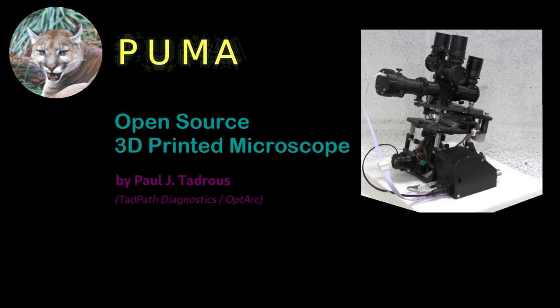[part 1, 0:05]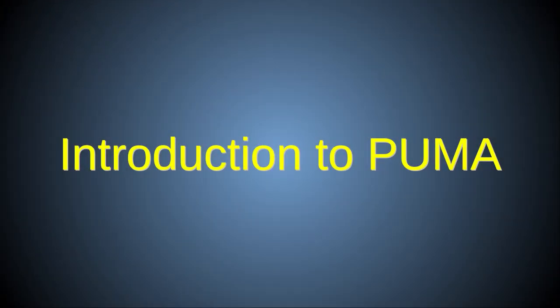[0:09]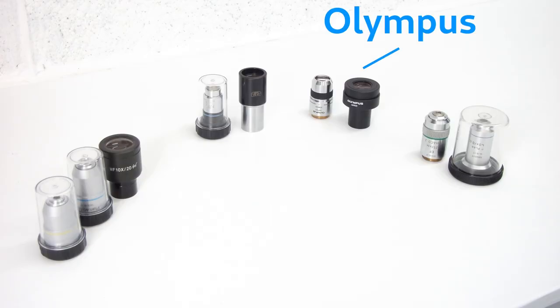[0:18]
This is an overview of PUMA, an open-source 3D printed microscope which you can build as a DIY project. It was designed to use professional quality optics for research and education as a portable and low-cost alternative to the much more expensive commercially available scopes like this one.
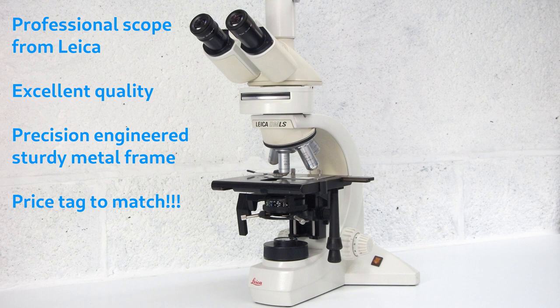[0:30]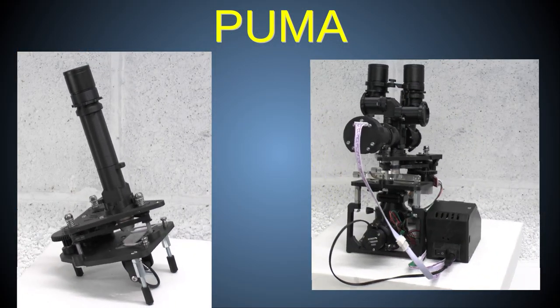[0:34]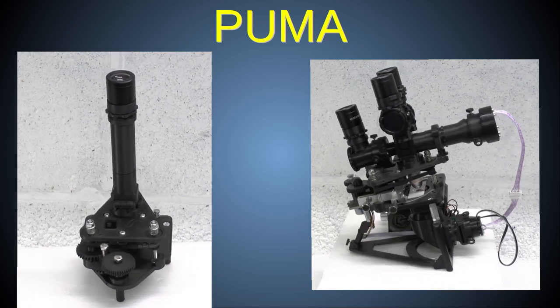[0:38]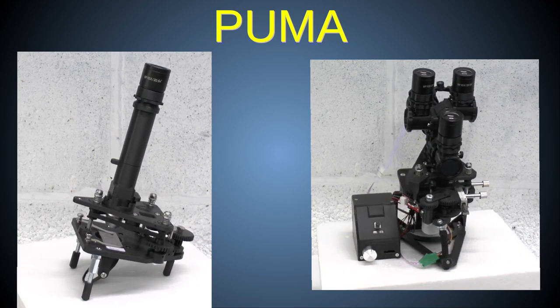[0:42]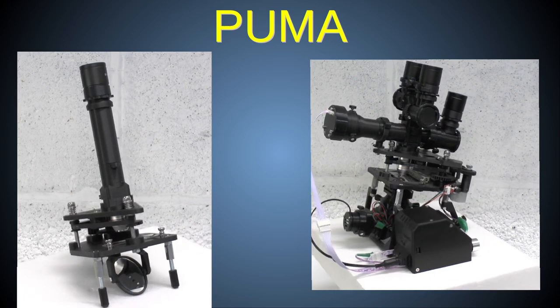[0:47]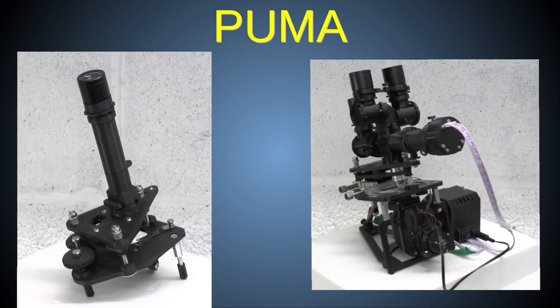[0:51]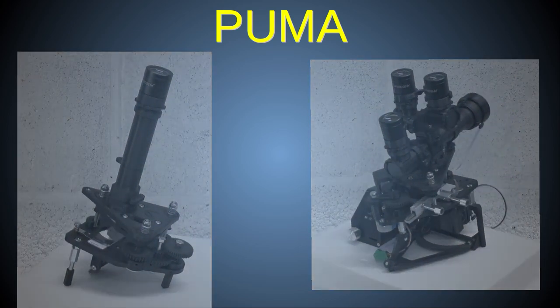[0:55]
PUMA is open-source and fully customizable. However, because its frame is made of 3D printed plastic, PUMA does have some limitations over those all-metal scopes, but it also has some very advanced features that are not usually found even in the most expensive professional scopes. This video will introduce you to those features and limitations, so you can decide if a PUMA microscope is suitable for you.
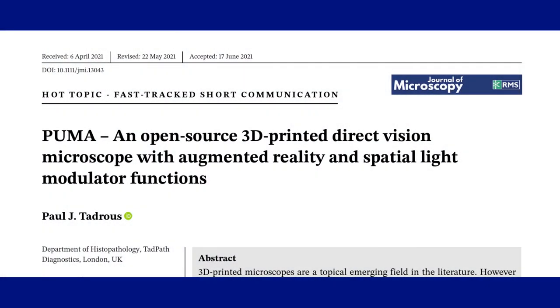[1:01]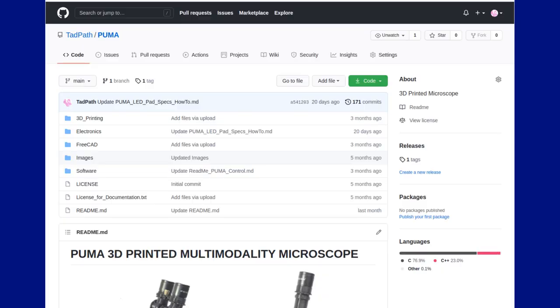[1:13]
For more detailed information about PUMA, see this peer-reviewed scientific paper published in the Journal of Microscopy, and also the PUMA GitHub page. Links to both of these are in the video description below. This YouTube channel will also provide more detailed videos on specific aspects of PUMA that are only briefly mentioned here.
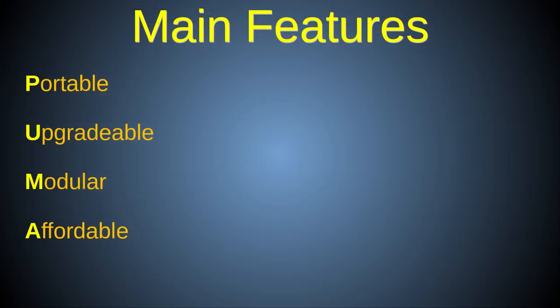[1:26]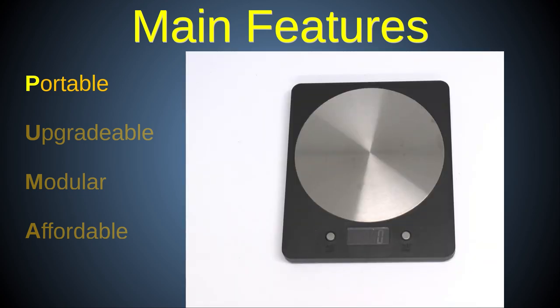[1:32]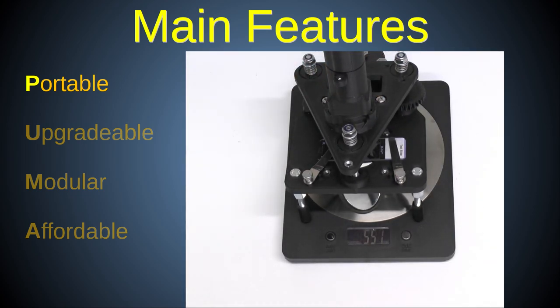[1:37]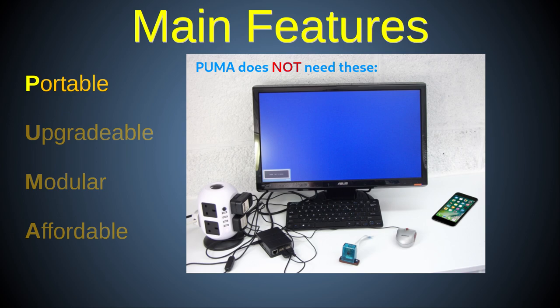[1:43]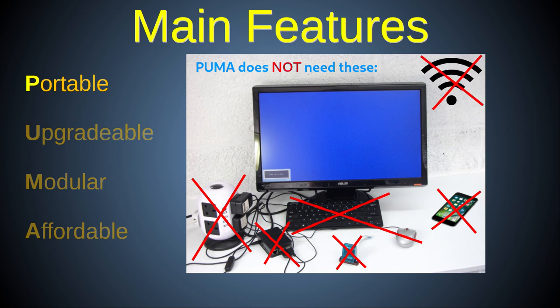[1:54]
PUMA stands for Portable, Upgradeable, Modular, and Affordable, some of the key features of this system. PUMA is totally portable. Not only is it small and lightweight, but, unlike many other professional microscopes, whether 3D printed or otherwise, it does not require mains electricity, a PC, a camera, a smartphone, mobile or internet signal, or a monitor to operate.
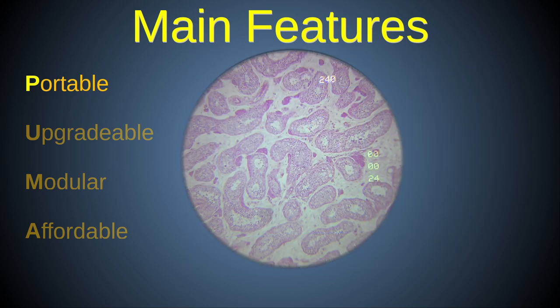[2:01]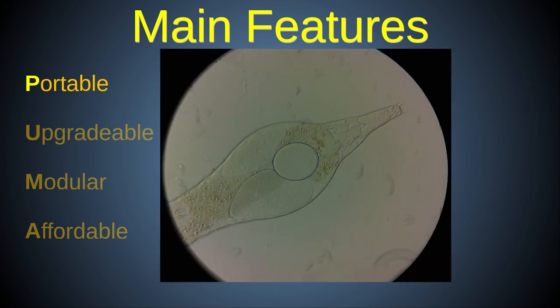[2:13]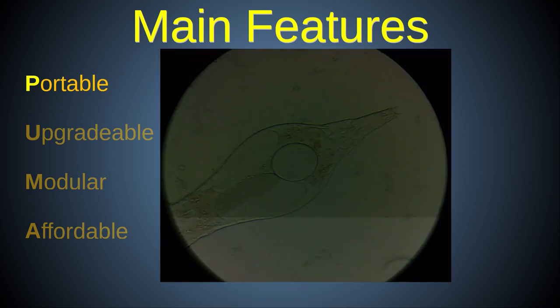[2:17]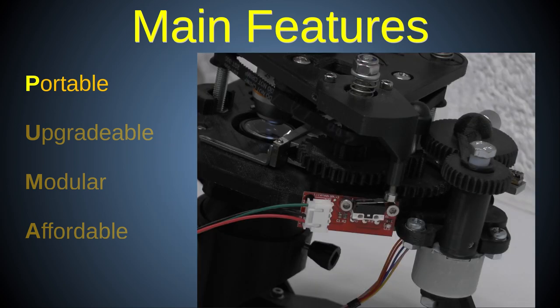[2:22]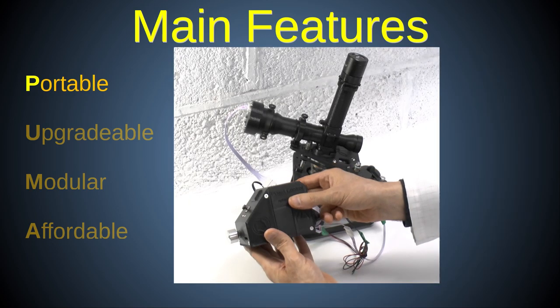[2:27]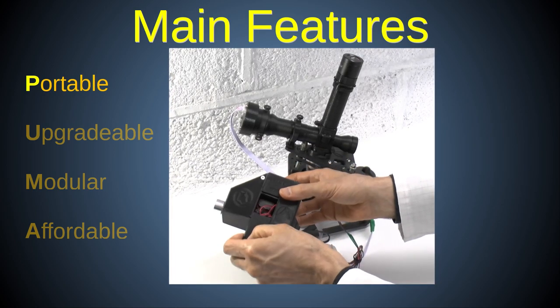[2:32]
Even PUMA's advanced options, such as its augmented reality heads-up display that can provide mobile image analysis, amongst other things, Fourier light filtration for phase contrast and other advanced lighting effects, and a motorized Z stage, are completely portable, being driven by a small battery-operated control unit which includes an Arduino Nano microcontroller.
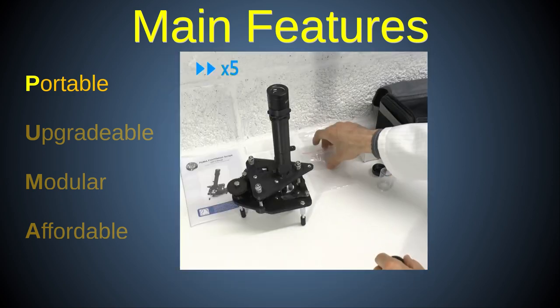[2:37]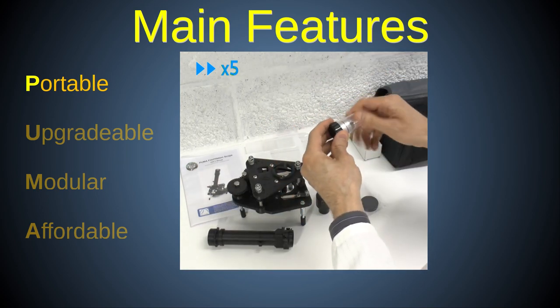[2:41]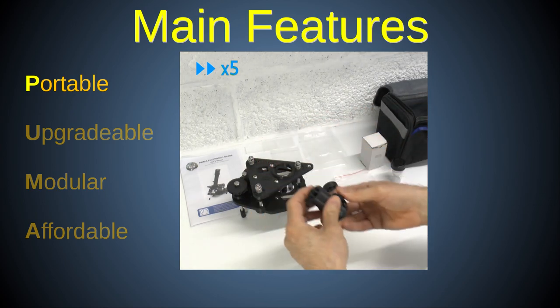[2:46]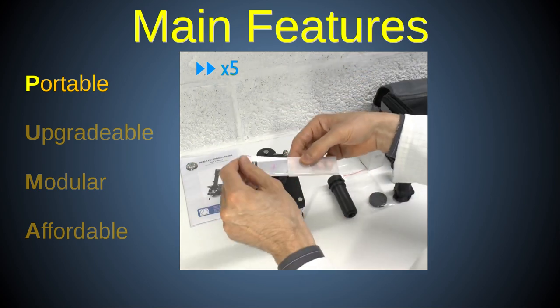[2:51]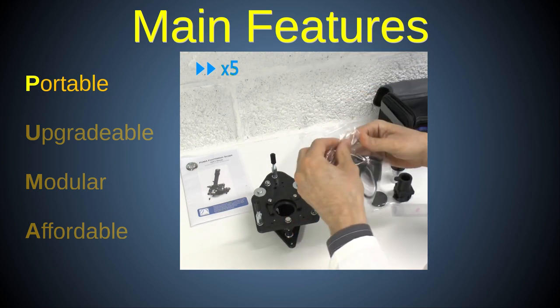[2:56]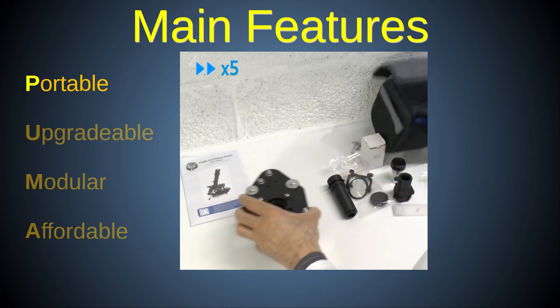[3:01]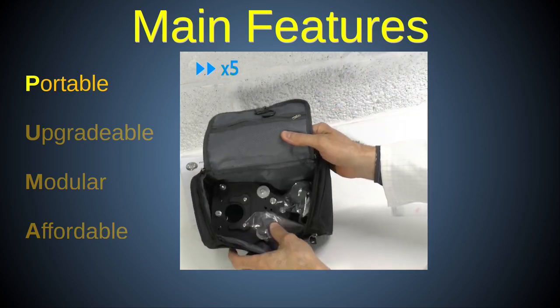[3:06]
PUMA scopes can also be quickly field stripped for transport and likewise reassembled. So, PUMA can be used for extended periods in remote places without mains electricity or internet connectivity. However, there is also the option to use an external mains power adapter, as well as interfacing to a computer, etc., if full portability is not required, so making PUMA a versatile laboratory benchtop instrument as well.
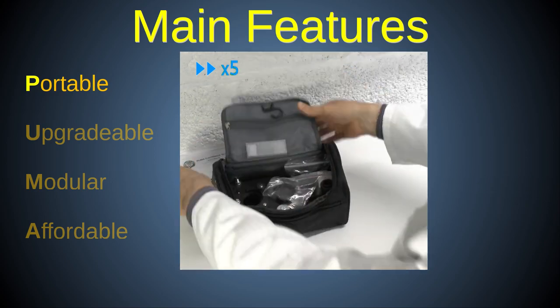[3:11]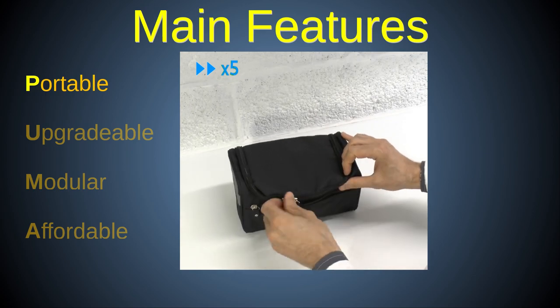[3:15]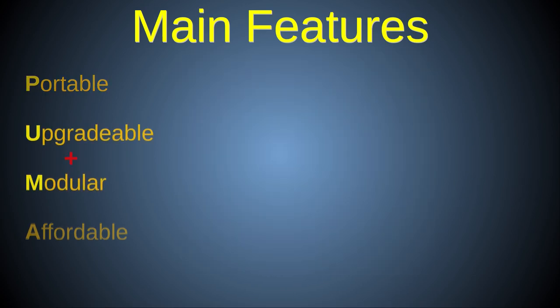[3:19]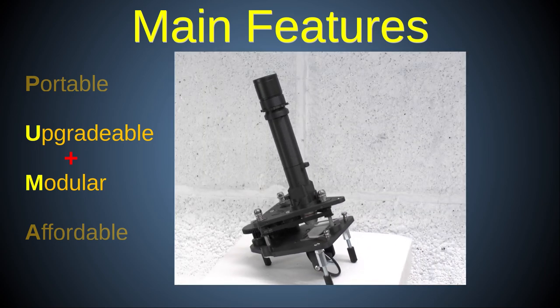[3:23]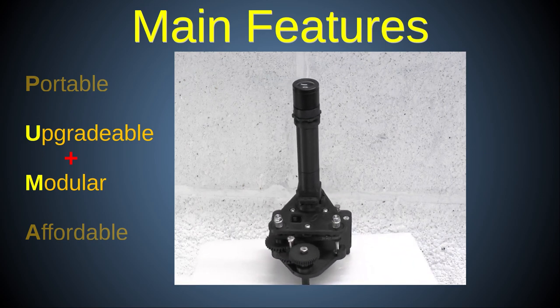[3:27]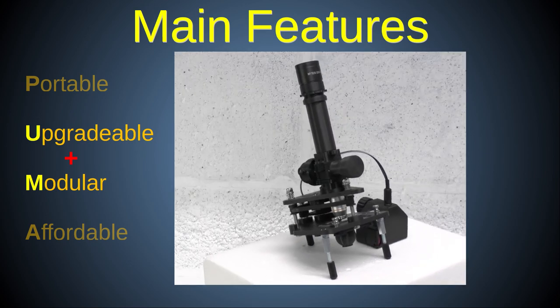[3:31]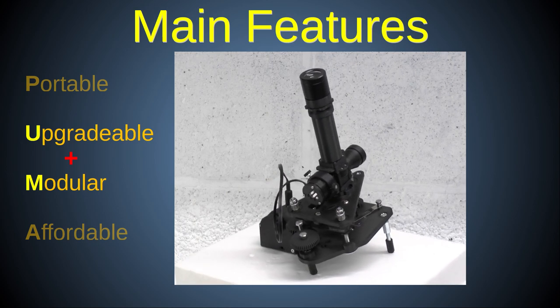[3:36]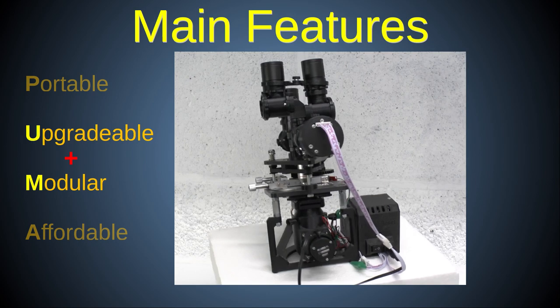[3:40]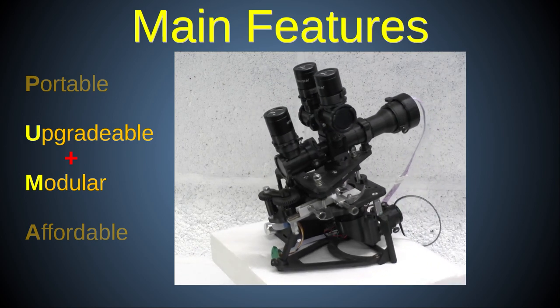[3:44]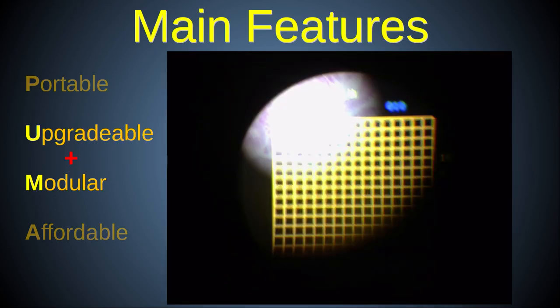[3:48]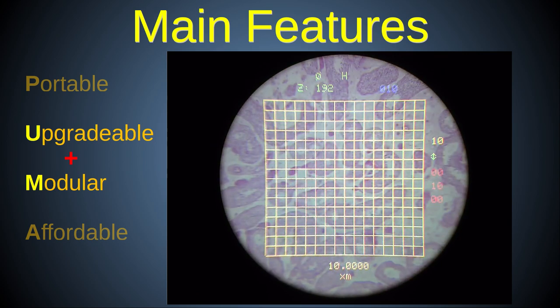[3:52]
Like many professional series of laboratory microscopes, PUMA is modular. You can use it as a simple but high-quality monocular microscope with an adjustable mirror for illumination, so not requiring any electronics at all, to scopes with powered illumination, including epi-illumination, all the way through to an advanced trinocular scope with full color illumination and an augmented reality projection unit for heads-up display of its integrated computer, allowing for digital measurements and much more, while still being fully portable.
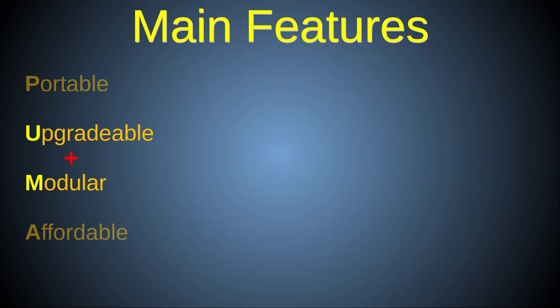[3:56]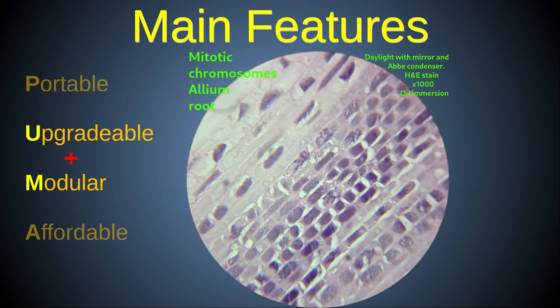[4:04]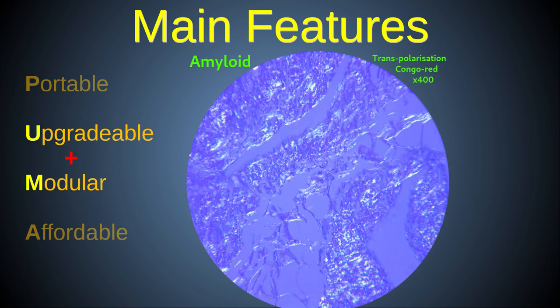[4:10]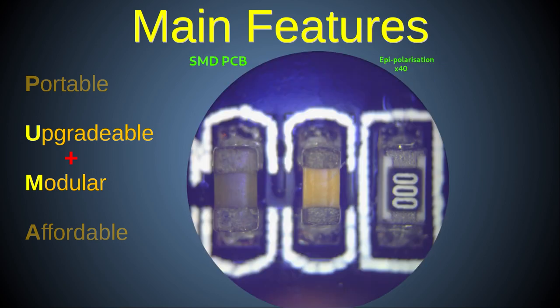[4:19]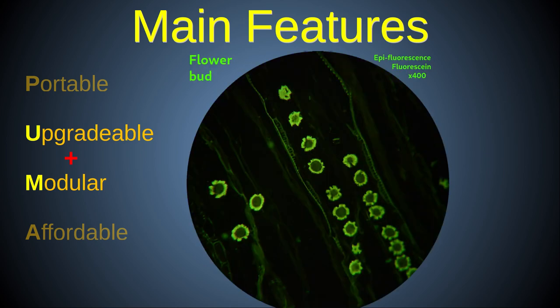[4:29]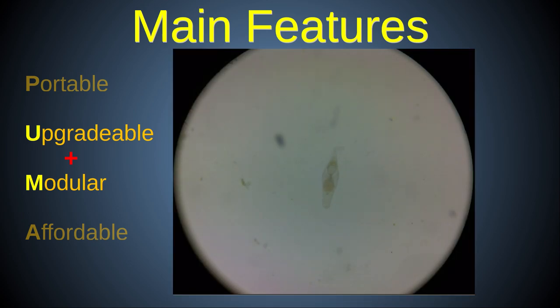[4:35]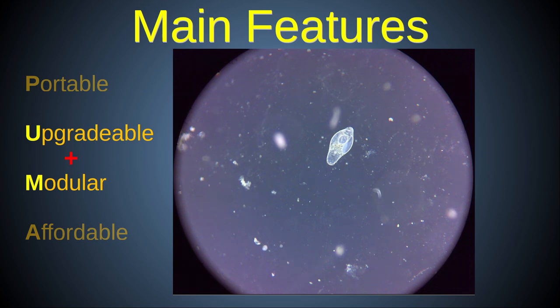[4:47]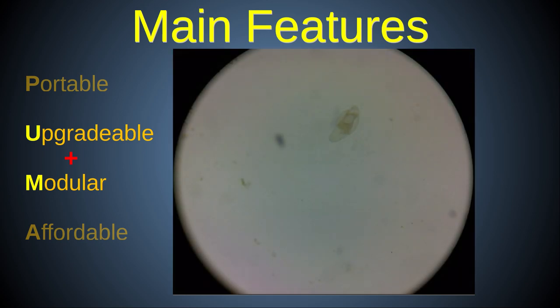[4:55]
Many other configurations are also possible via its optional interchangeable modules, for example, mirror illumination with an Abbe condenser for high magnification imaging without electronics, powered transpolarization, useful for assessing birefringence in biological tissue sections, a range of epi-illumination options, from plain epi-illumination with white light, with the option of epipolarization, to epifluorescence microscopy for advanced research applications. Even phase contrast using the Schlieren method, so not requiring expensive phase objectives, is possible, as is dark ground microscopy. These advanced modalities are easily achieved by making use of the versatile condenser aperture system for Fourier light processing.
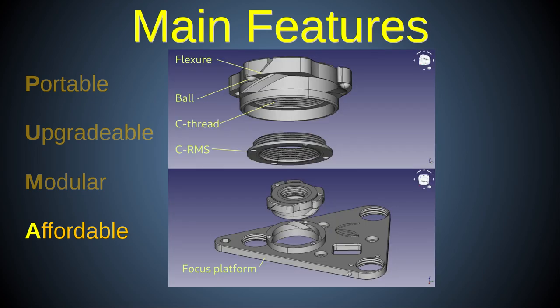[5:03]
All aspects of PUMA are open source and not monopolized behind paywalls and patents. Even the original CAD files are available from the GitHub page, not just fixed STL mesh files. So you can easily edit and customize the scope to suit your own project needs.
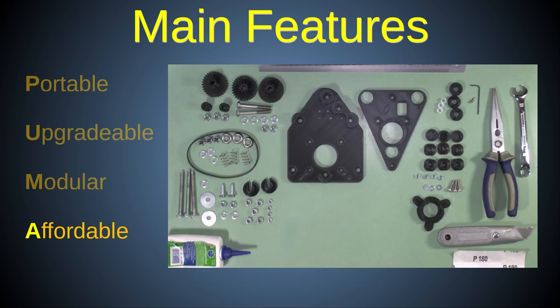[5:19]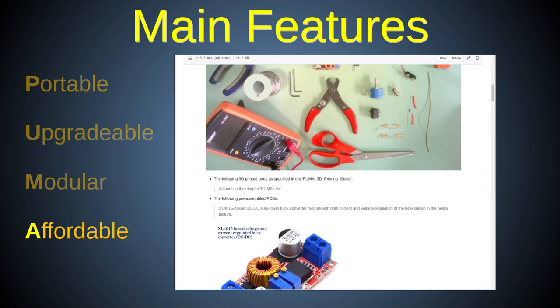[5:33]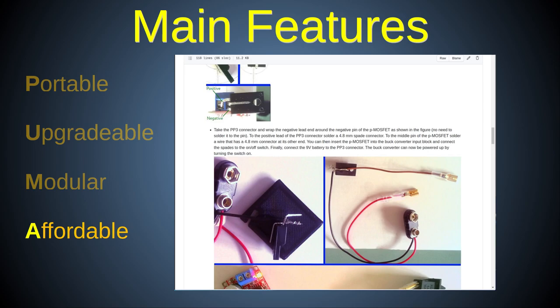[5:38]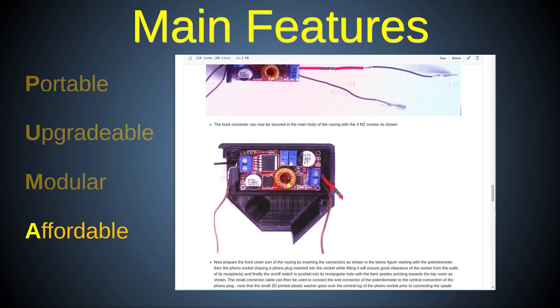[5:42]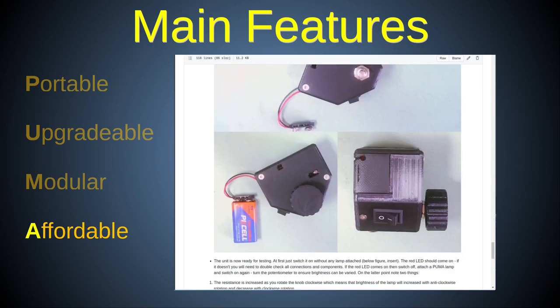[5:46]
As a 3D printed project, it is designed to be built and customized by anyone with access to 3D printing, and uses standard fixtures and fittings that are readily available from a variety of popular retail outlets. Even the high-quality optics can be purchased from general outlets. You don't need to buy any component from a specialist university optics supplier or a major microscope manufacturer to get a professional quality optical experience.
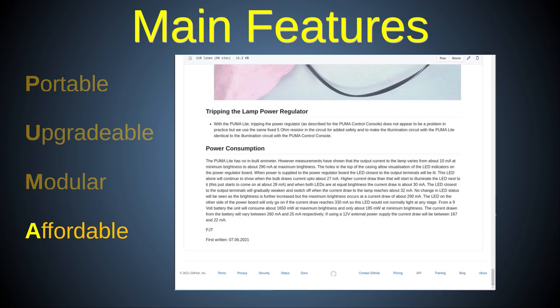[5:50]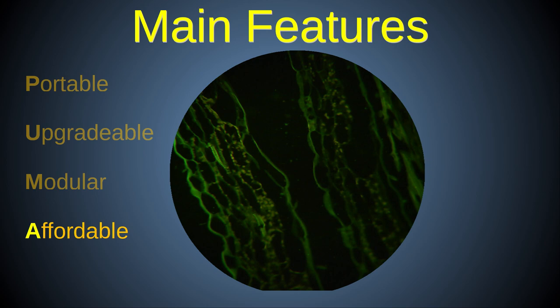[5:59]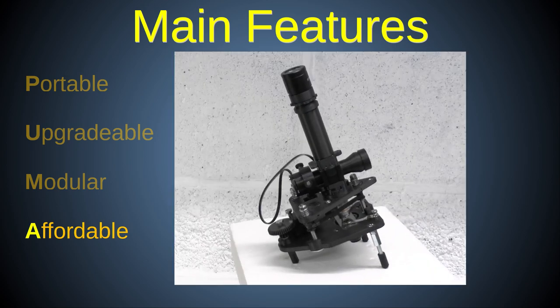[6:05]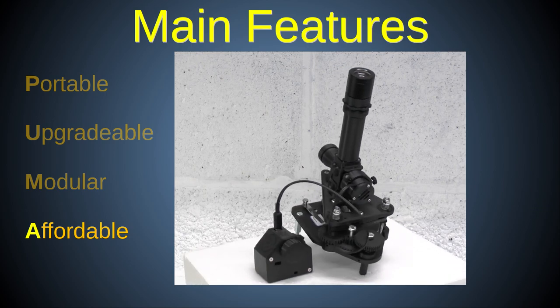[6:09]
Example costs for self-built PUMA scopes are given in the Journal of Microscopy publication. For example, a practical epi-fluorescence PUMA microscope, including all the high-quality optics and electronics, can be made for under £80 if full DIY printing and assembly are used.
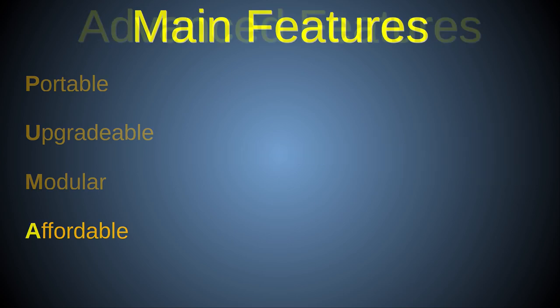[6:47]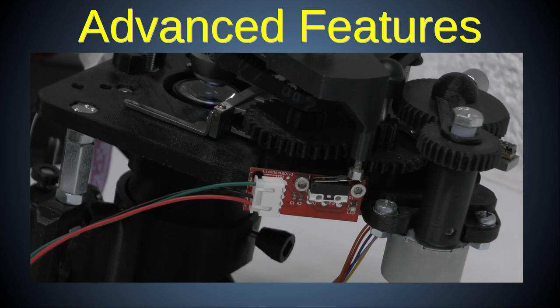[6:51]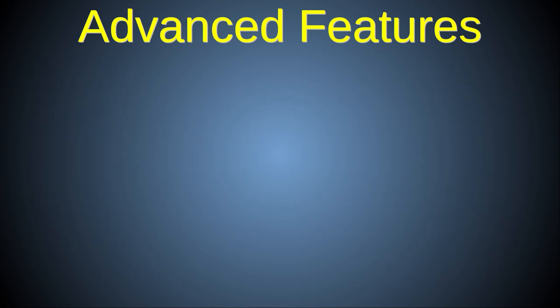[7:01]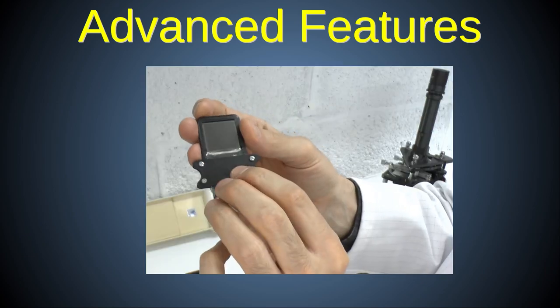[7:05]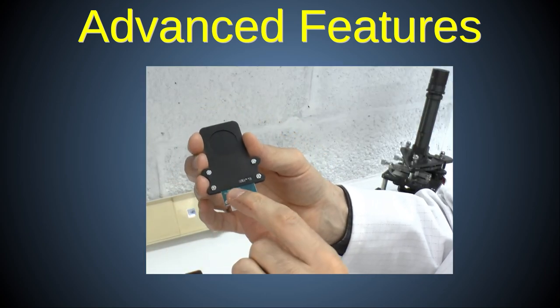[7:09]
In addition to the option of a motorized Z stage and multiple illumination modes, PUMA has two advanced options which are not usually found even on the most expensive commercial research microscopes. The first of these is the PUMA TFT screen-based Spatial Light Modulator.
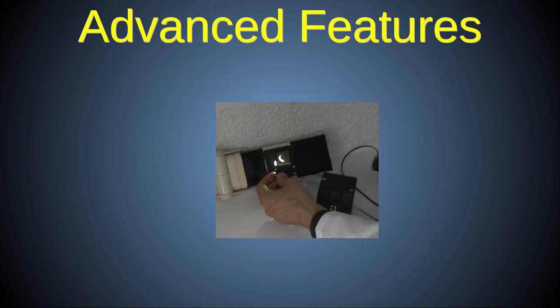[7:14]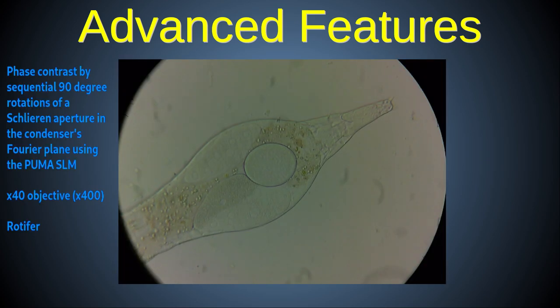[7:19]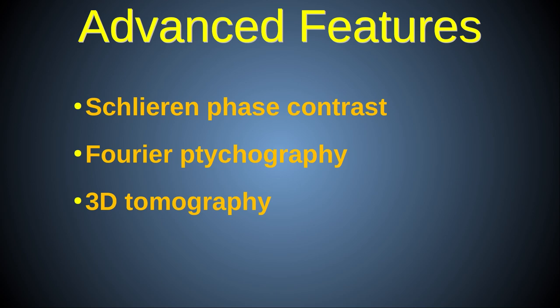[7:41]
This is as easy to use as a standard filter, and allows shaping of the illumination in either the plane of the illuminated field diaphragm or the Fourier plane of the condenser, or both simultaneously. I'm also working on an adapter that will allow it to be used in the Fourier plane of the objective as well, although this add-on is not ready for release at the time of making this video. Fourier light filtering allows for advanced imaging modalities such as Schlieren phase contrast, Fourier ptychography, and 3D tomography.
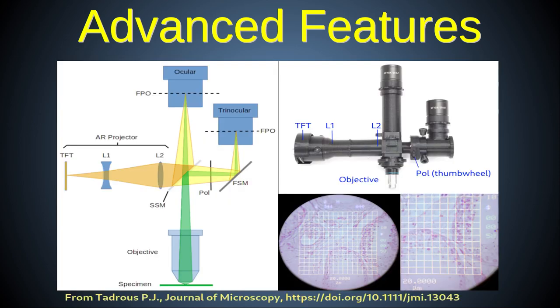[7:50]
The second advanced feature is the Augmented Reality Heads-Up Display, or HUD. This employs an optical superposition projector that allows an interactive digital HUD to be superimposed on the live optical microscope image for digital visual feedback and interactive measurements, amongst other things.
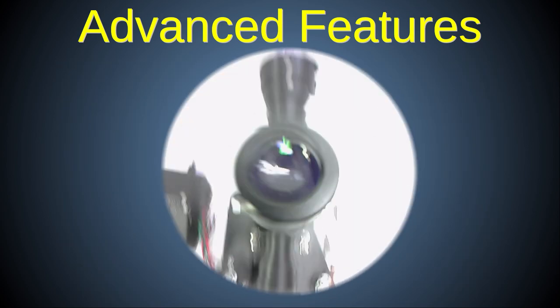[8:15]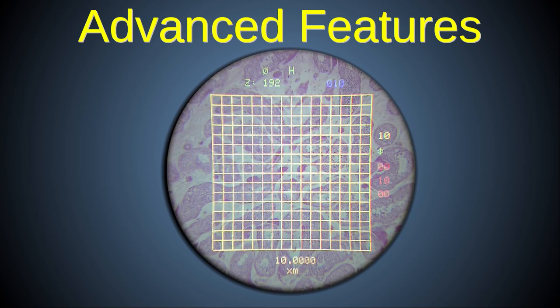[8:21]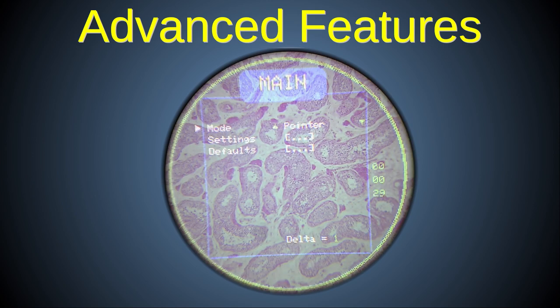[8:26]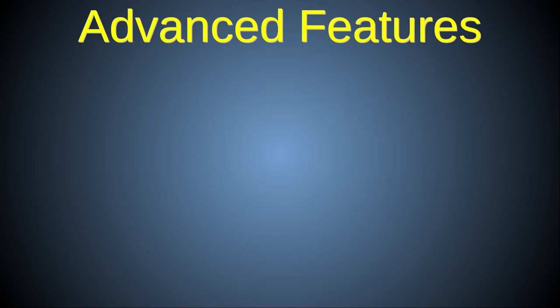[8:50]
These advanced features can be combined. For example, information from digital image analysis of a live camera feed of the specimen can be used to shape the Fourier aperture of the microscope via the SLM, and or present feedback of regions of interest to the user in almost real time via the HUD. This type of advanced application requires a user-customized interface system, but at least the PUMA hardware makes it possible and affordable. To do this with traditional commercially available microscope equipment would cost tens of thousands of pounds.
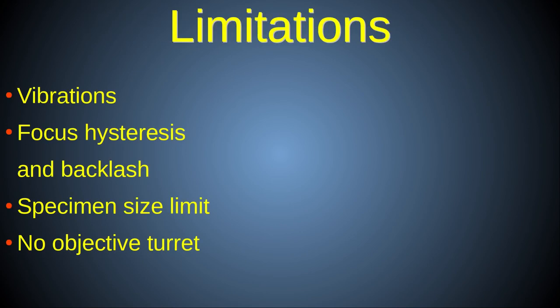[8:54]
With any scientific instrument, a full appreciation of its limitations is essential to knowing whether that instrument will be useful in any particular study. Perhaps the most significant limitations of the PUMA system are issues of mechanical stability, the unique movement characteristics of its focus mechanism, sample size limitations, and the fact that you need to interrupt observation in order to change objective.
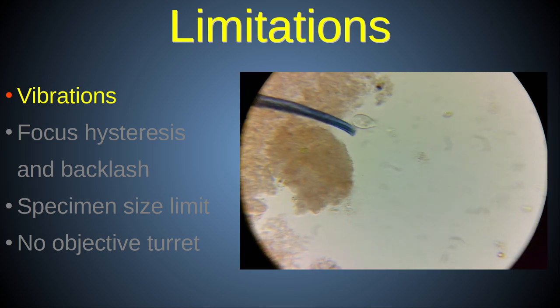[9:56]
Regarding stability, it should come as no surprise that, being made of 3D printed plastic, the frame of the PUMA is susceptible to vibrations. If the scope or the workbench is disturbed during use, this results in vibrational wobble of the observed image, which is most noticeable with high magnification objectives, such as x40 and above, and when handling the scope during focusing or moving the slide around. This vibrational wobble is illustrated by this video clip taken with a x40 objective.
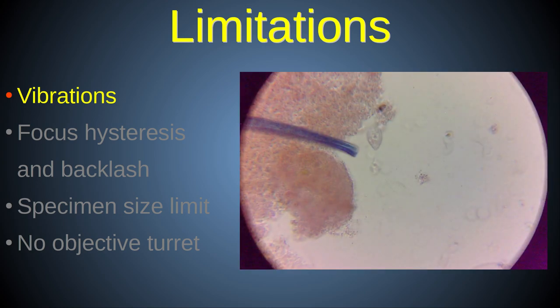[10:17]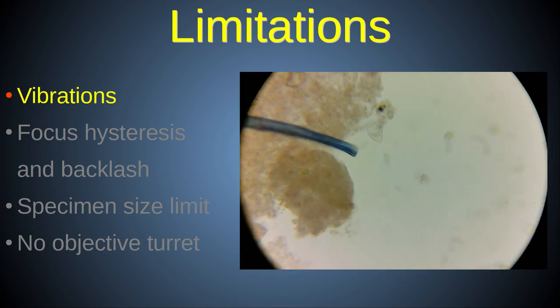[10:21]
Fortunately, image vibration settles down after about a second to a stable image, provided no further external forces are encountered. This wobble can also be ameliorated by the use of dampening pads under the feet. Also, the use of the Z-stage focusing motor greatly reduces this vibration effect compared to manual focusing.
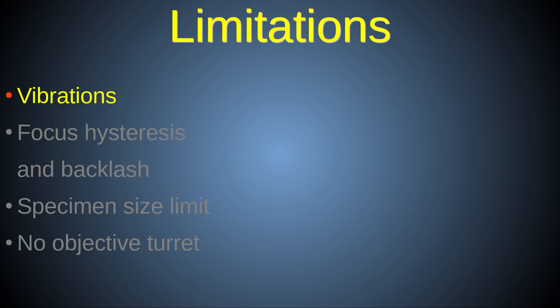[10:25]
As can be seen from the high-quality pictures and video shown elsewhere in this presentation and other publications using PUMA, this image vibration effect is by no means an absolute barrier to making and recording good quality observations. The video clip in the following section shows Z focusing with the motorized stage. When you see it, note how relatively free of vibrations the image is.
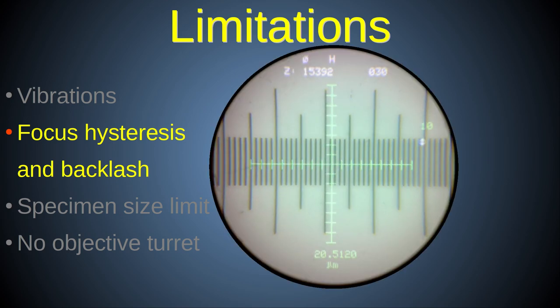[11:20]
Regarding the focus motion characteristics, the unique timing belt and pulley system of the PUMA Z stage has a characteristic form of elastic backlash and XY hysteresis. This means that the image shifts in X and Y whenever the direction of focus changes, and there is a lag between reversing direction of the focus gear and the actual platform changing direction. The elastic backlash can be compensated for when using a Z motor, but this does not alter the XY hysteresis behavior. This is something that just has to be gotten used to.
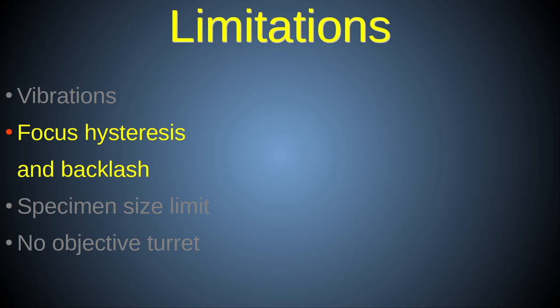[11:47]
The good news is that the XY hysteresis shift is accurately and predictably reversible, so it is possible to accurately reposition the stage in X, Y, and Z, provided one approaches the required Z plane from the same direction each time.
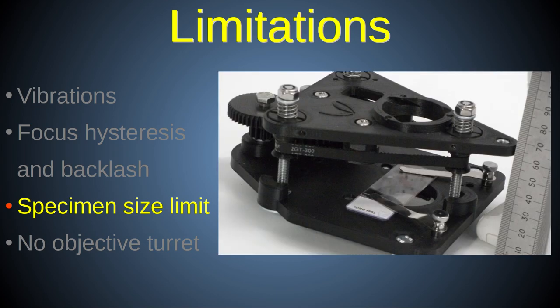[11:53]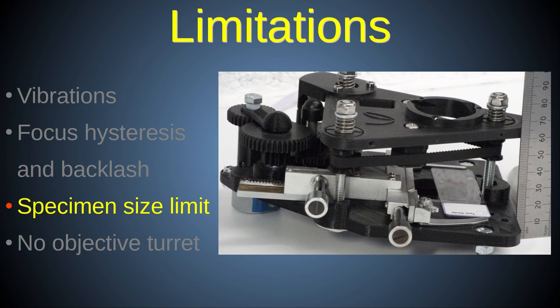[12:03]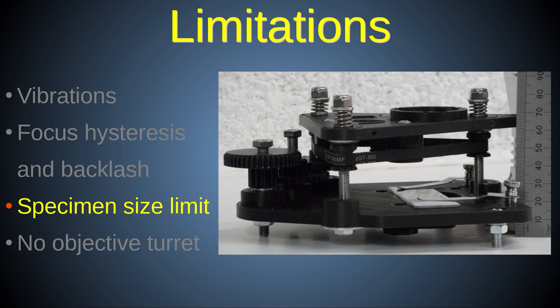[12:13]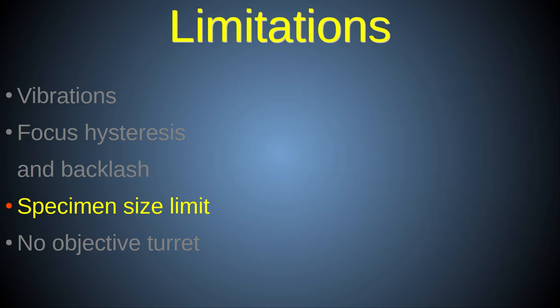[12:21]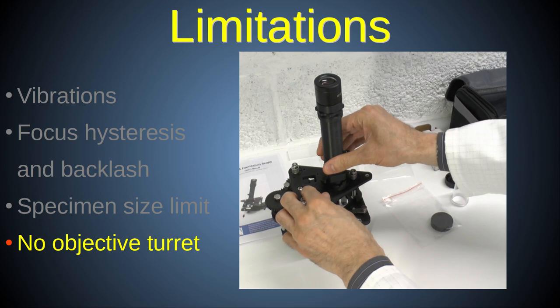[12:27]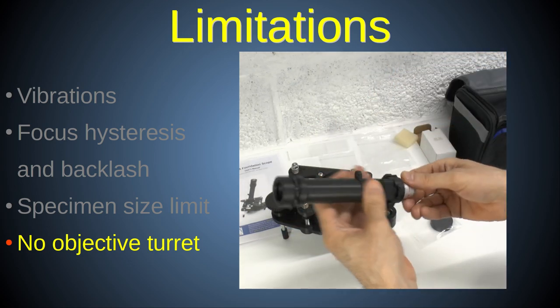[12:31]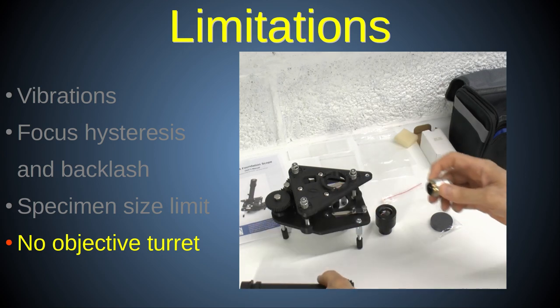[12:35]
Regarding specimen size limitation, this is due to the tri-post architecture of the PUMA Z stage, and there is no workaround for this. The stage was designed so that it can accommodate the full working surface of a standard 25 by 75 mm glass microscope slide, and it does this very well. However, objects of larger surface area and objects higher than about 25 mm cannot be accommodated on the stage. PUMA also has no objective turret, so to change objective, you need to remove the optical tube to remove the current objective and insert the new one.
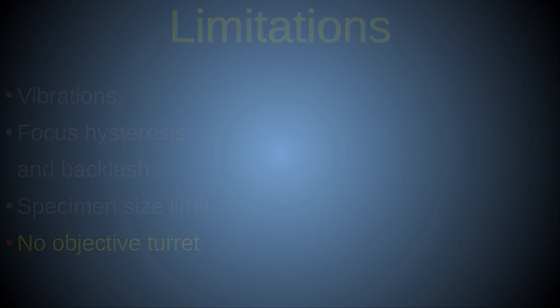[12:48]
A more complete list of limitations of the PUMA system can be found on the PUMA GitHub page and the Journal of Microscopy publication referenced in the video description. This was a very brief overview of PUMA.
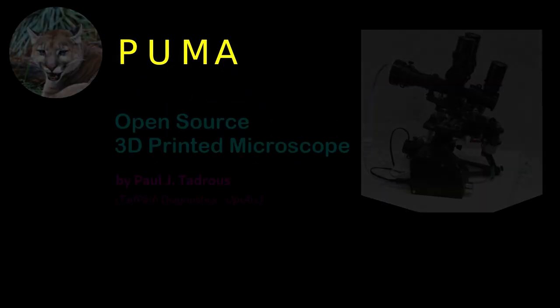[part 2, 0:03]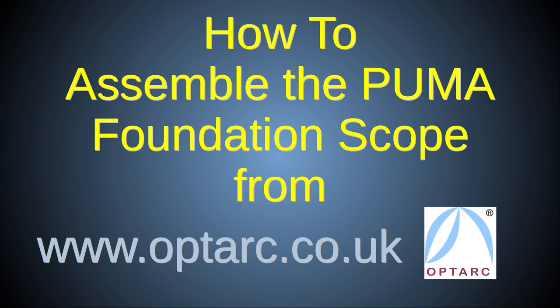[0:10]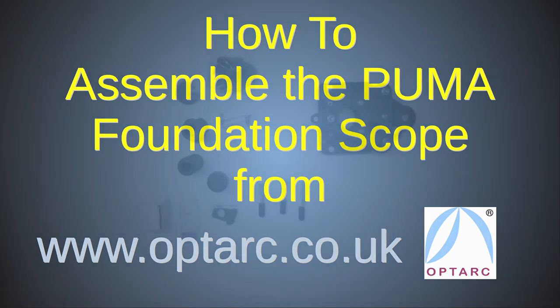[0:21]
Now, in a previous video, I showed how to unbox the PUMA foundation scope from the Optarc package. In this video, I'll show you how to set up the scope and assemble it for first use. So we've got our components here.
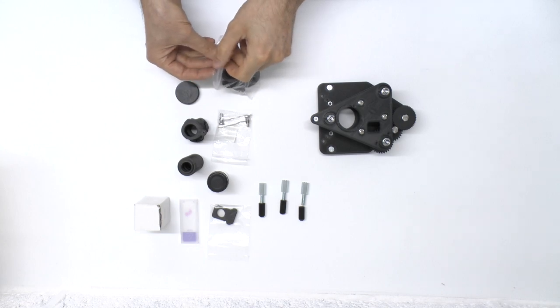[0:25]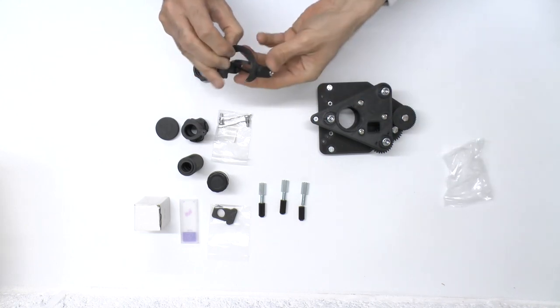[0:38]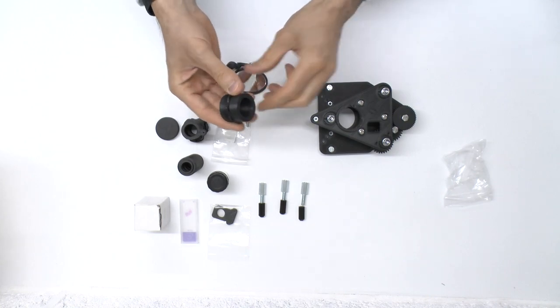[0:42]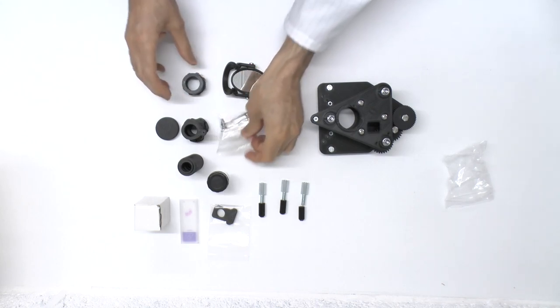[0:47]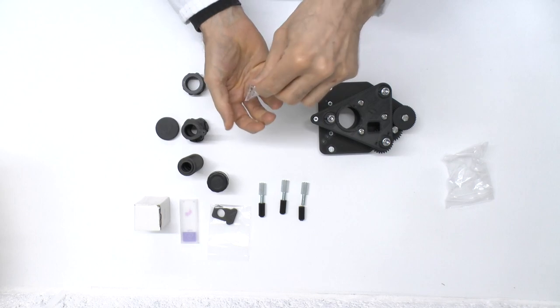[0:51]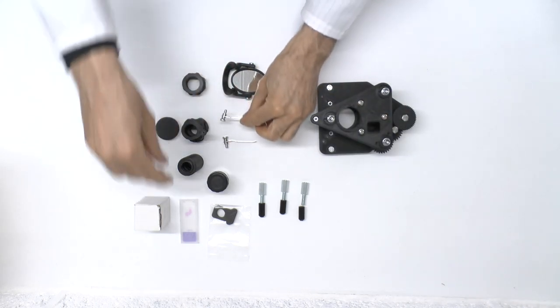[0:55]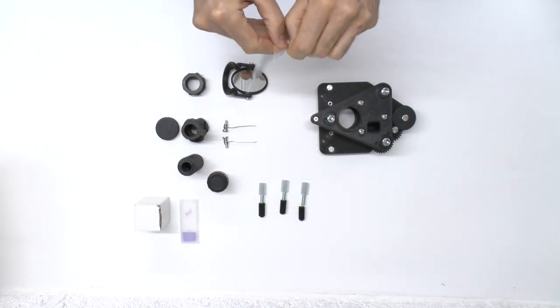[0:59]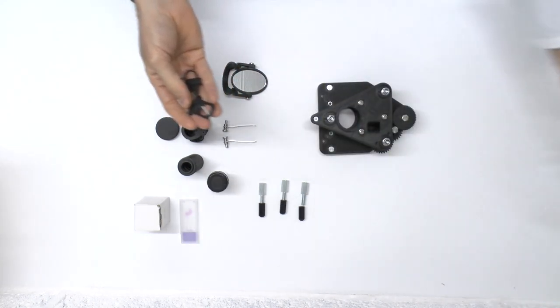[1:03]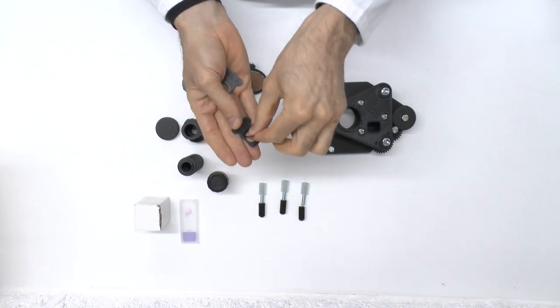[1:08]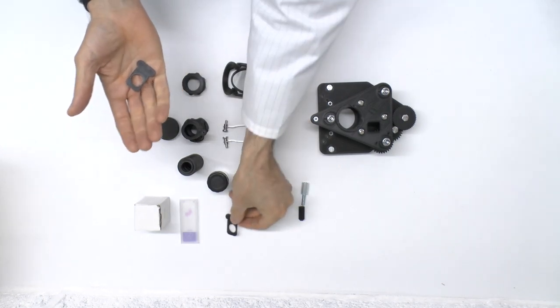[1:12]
The first thing we'll do is take out the components that are in the little separate plastic bags. So this is the mirror assembly, which is partially pre-assembled for you. Here's the mirror. And the other thing that was in this packet was the ocular lens holder. Here are the stage clips. Here are the two blank filter trays. And the little rings are there to hold any filters you have in place. They come with it.
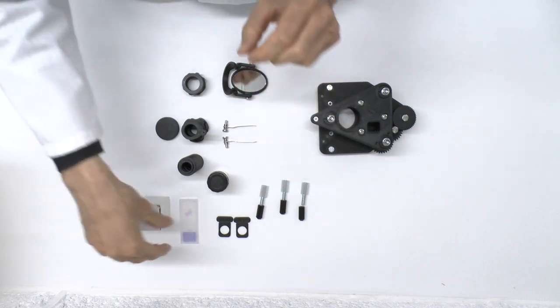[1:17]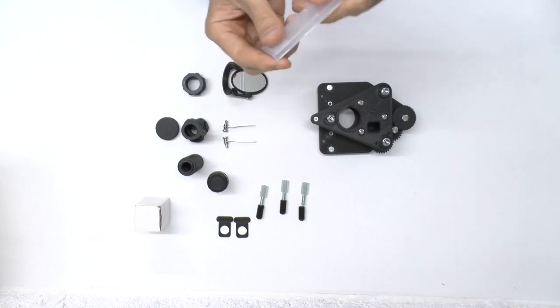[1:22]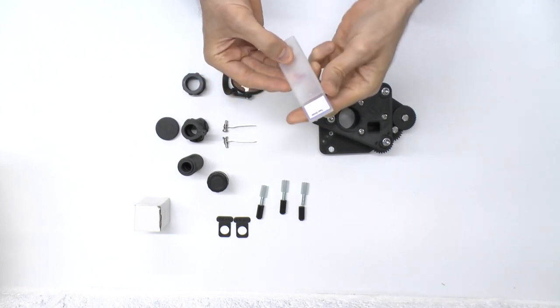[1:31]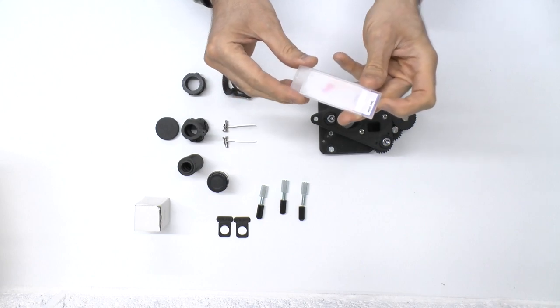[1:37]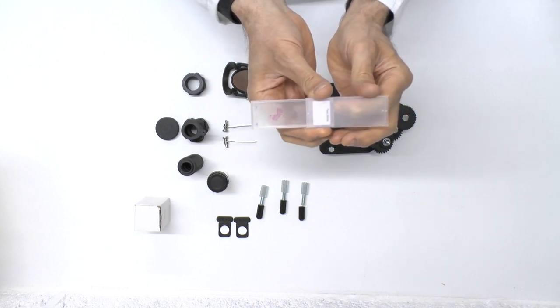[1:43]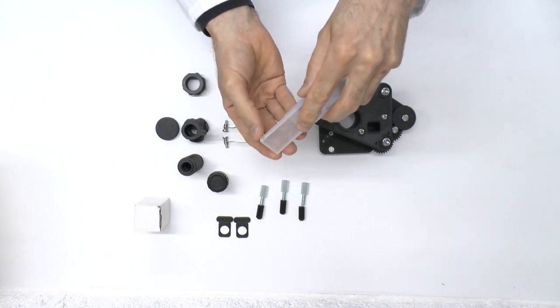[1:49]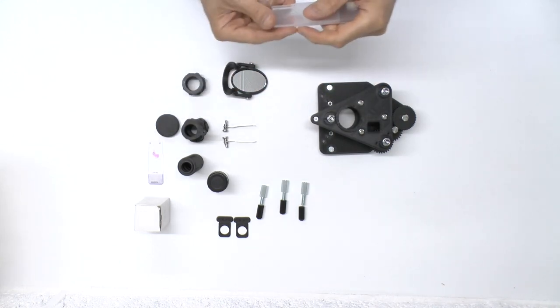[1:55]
And finally, well, not finally, we have the ocular lens finally, but this is the test slide. So this test slide is in a box, protective case. If you slide it where the label is forward, it only goes that far, so you can read the label. But it's stopped from going any further by two little stops here. If you want to actually take the slide out of the case, you have to push it the other direction. So that goes all the way down, up to there and stops, but that gives you enough room to get the slide out of the case like that. So put that to one side. And that's a protective case.
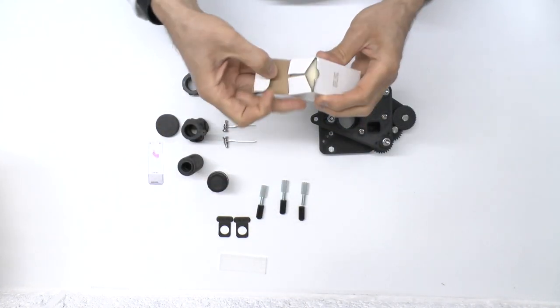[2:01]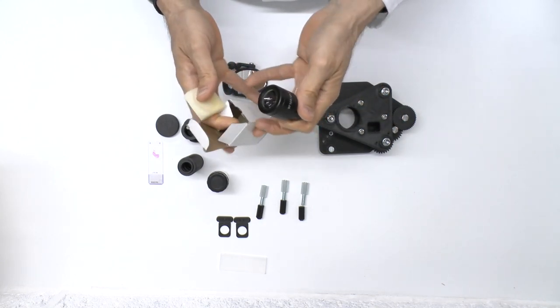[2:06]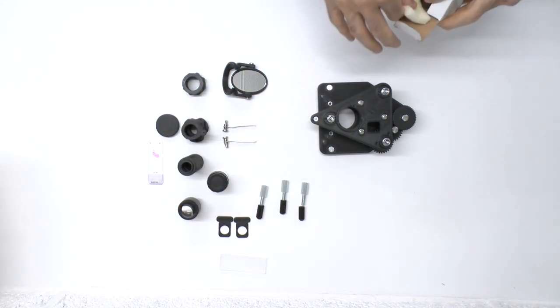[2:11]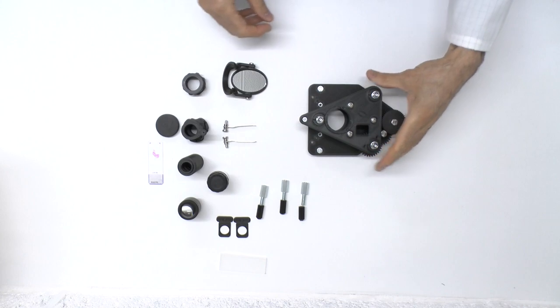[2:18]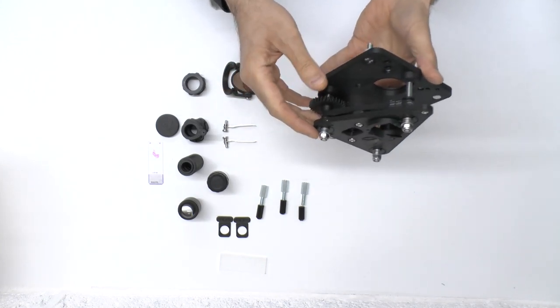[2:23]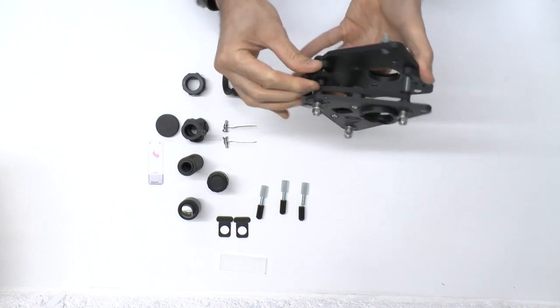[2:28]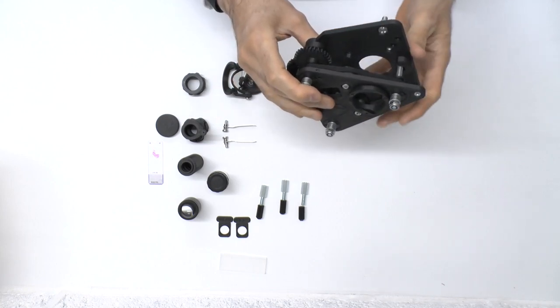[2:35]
And finally, we have the ocular lens, high quality ocular lens. So put that there. So that's times 10 ocular lens. So, first thing we do is we take the main stage. For transport, the stage was elevated all the way up. We want to take some of the tension off those springs now, so we'll rotate this a little bit. Only a few turns, so the springs aren't fully compressed.
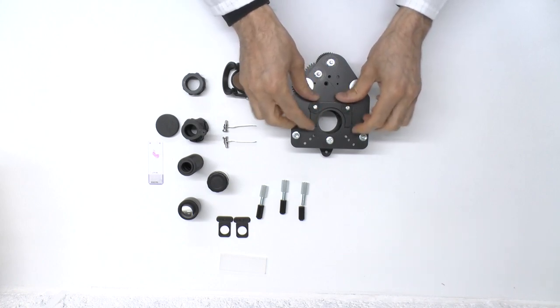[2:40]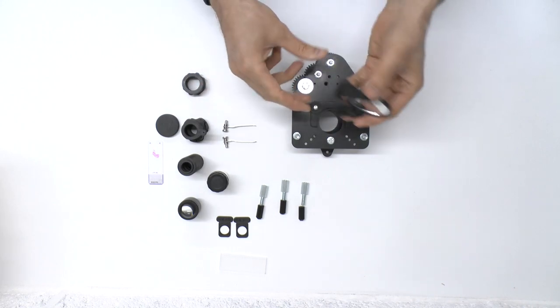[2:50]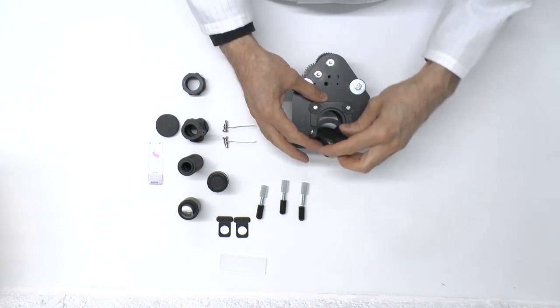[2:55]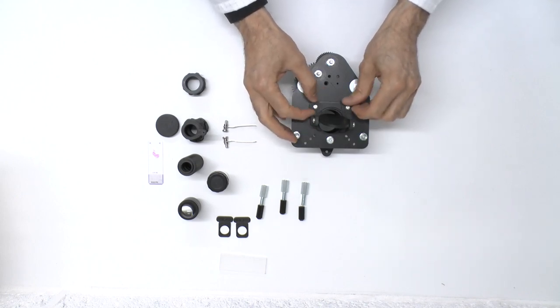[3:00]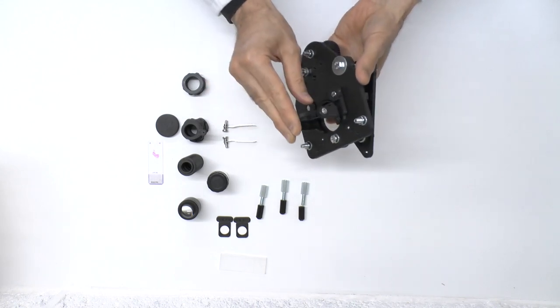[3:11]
Next thing we do is we turn this upside down. Now these will be a little bit loose. This is the holder that holds the mirror in place. So these will be a bit loose. They are two thumb screws that you can loosen and tighten. You want it to be a bit loose because the first thing you want to do is slot the mirror into the slot provided for it, like so. And once you've got it in, you simply tighten these up to a reasonable level. You may want a little bit of play in it so you can adjust the mirror, but you don't want it to be particularly loose. It doesn't have to be very tight, but you don't want it too loose either. So that's our mirror in place.
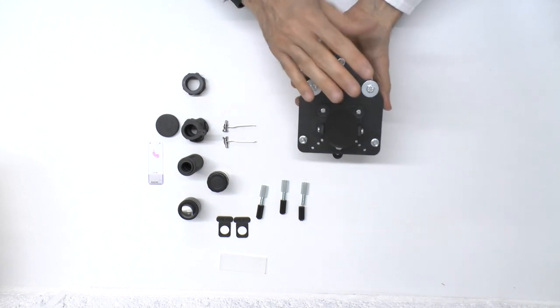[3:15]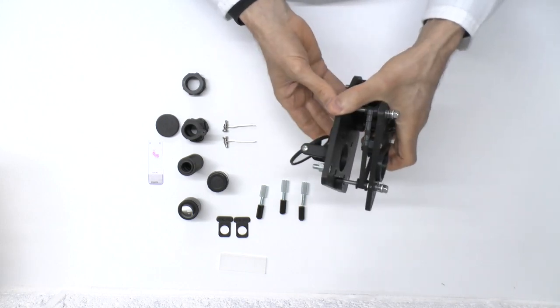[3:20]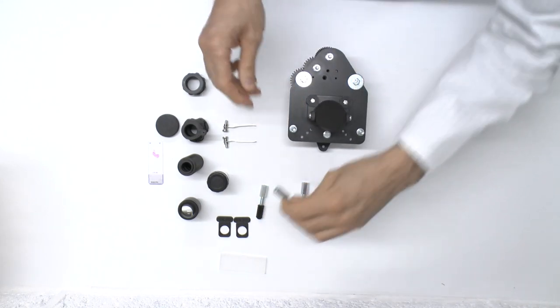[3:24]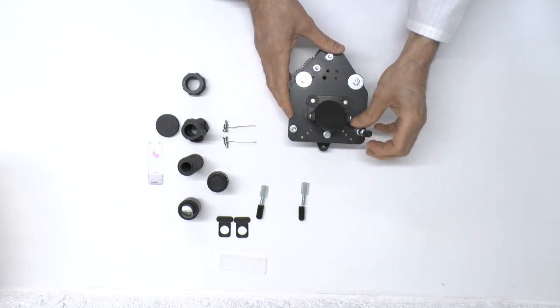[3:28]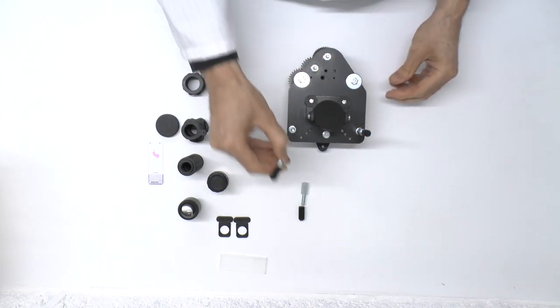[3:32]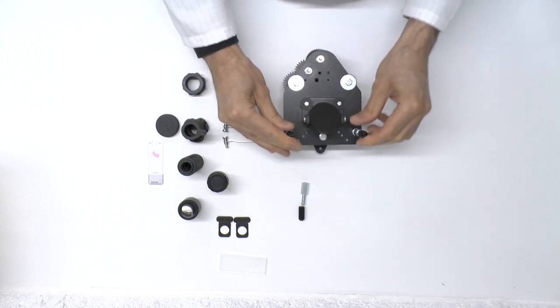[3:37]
Now, before we turn the scope the right way up, we need to put the legs in place because otherwise that mirror is sticking out and it'll be standing on the mirror. So the next thing to do is put the legs in place. So these are the front legs, the ones that are attached to the spacer already. So they just screw on like so, finger tight. You don't need a spanner or anything. There we are. And this back leg.
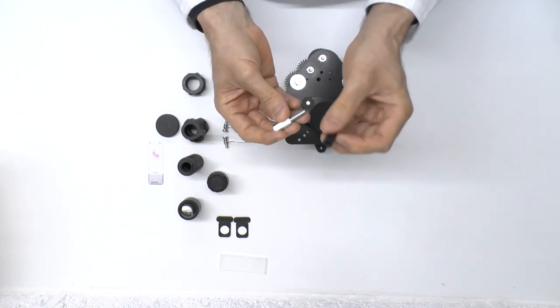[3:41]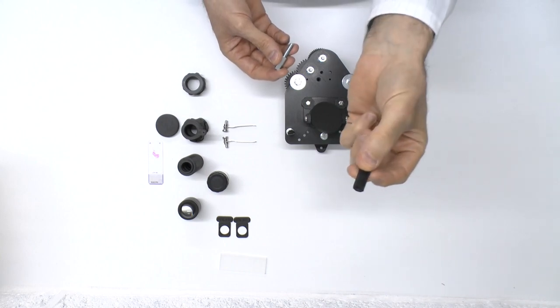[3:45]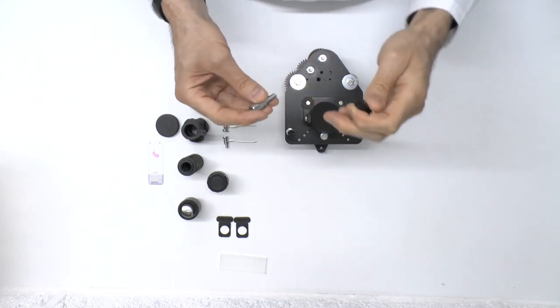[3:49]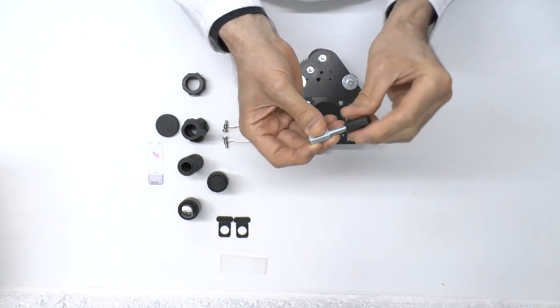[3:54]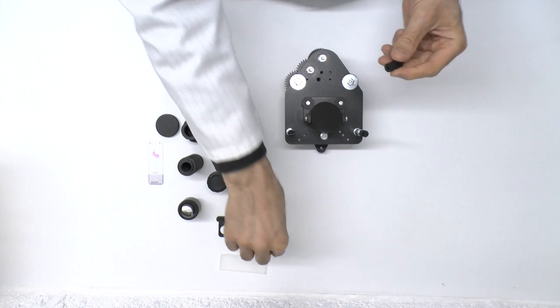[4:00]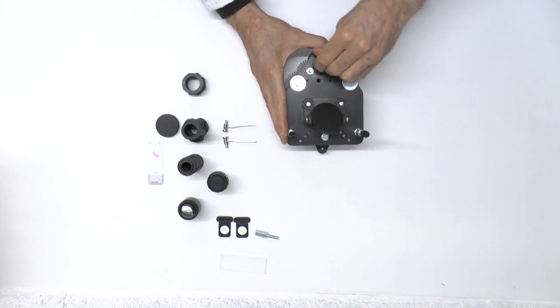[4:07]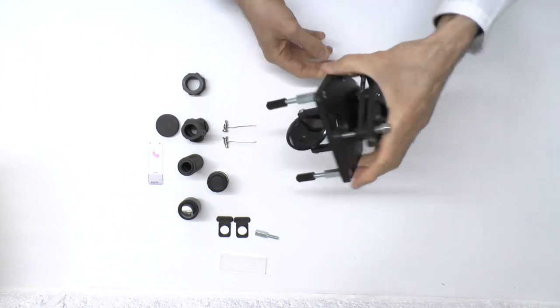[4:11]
Now, for ergonomic viewing, you only use the plastic leg, the 3D printed leg. If you need the scope to be perfectly level, because you're looking at fluid samples, then you will put this plastic leg on the spacer, just as the other two were, and put the spacer on. But I'm going to assemble this in the ergonomic position, so I'm just going to use the 3D printed leg directly onto the stage. So that screws onto this back thread. So now we have the legs in place, so that can stand up.
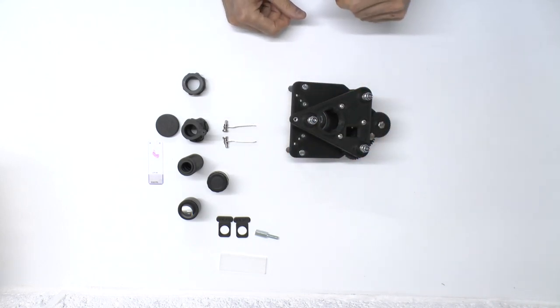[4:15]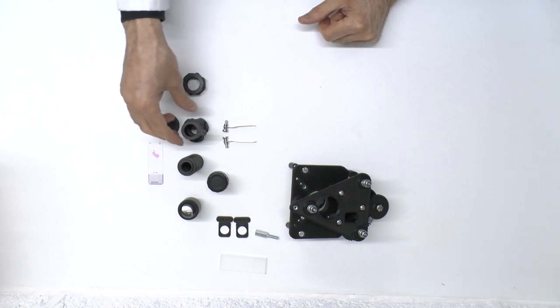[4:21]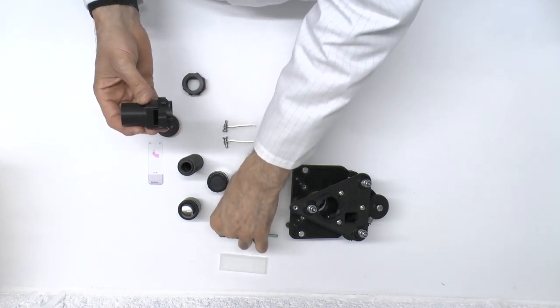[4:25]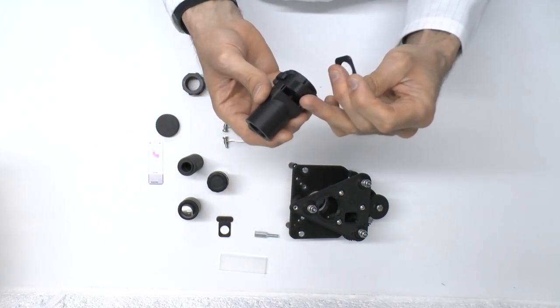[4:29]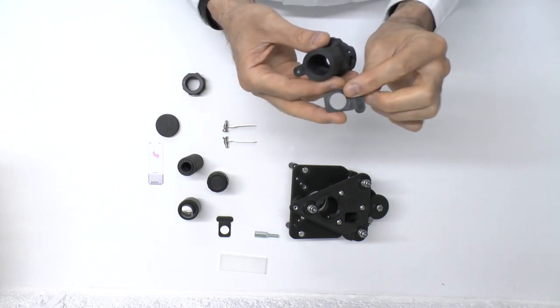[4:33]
Next thing we do is assemble the optical tube. So the stage is ready. We now want to assemble the optical tube. First thing, take your filter block and put the two empty filters in the slots just to block this slot so that we don't get stray light going into the tube.
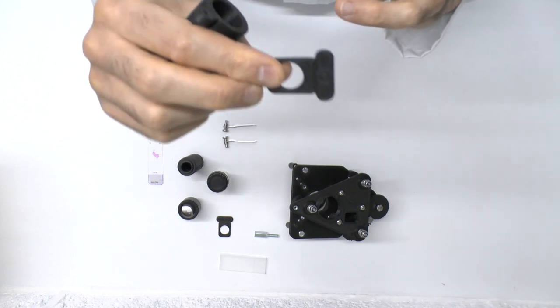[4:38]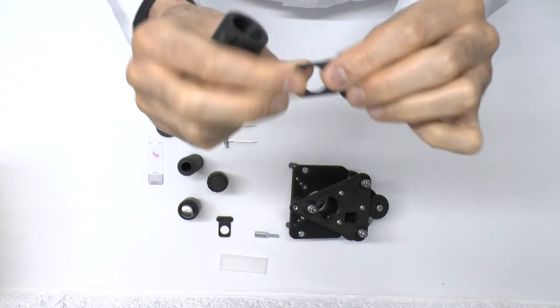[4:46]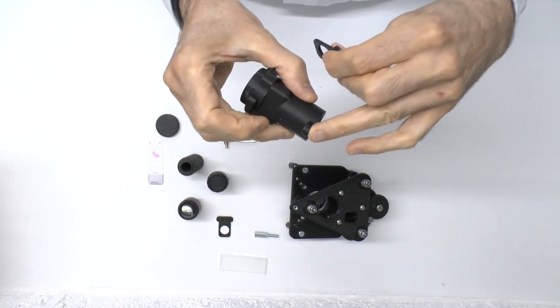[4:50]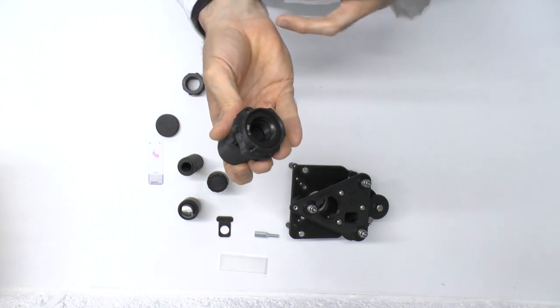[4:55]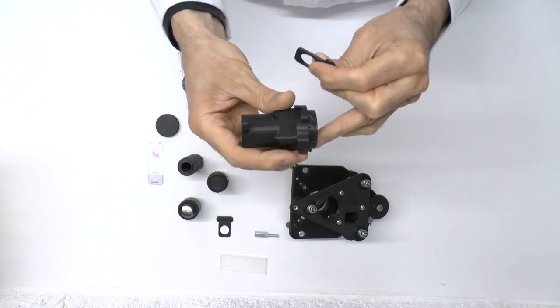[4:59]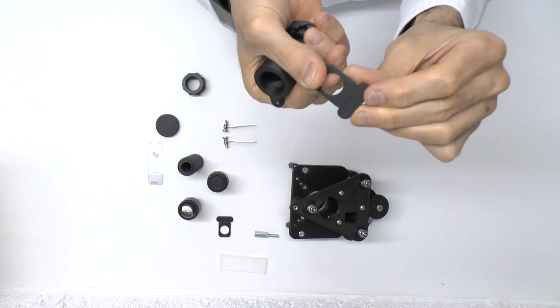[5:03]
Put the lower one in first, and it has to be the correct way up. You can see a little symbol on the slider here. That shows you that this is the top surface. Top surface means it goes towards this lug. That's the top surface. The bottom surface is the thread that the RMS objective goes into. So that's top, that's bottom. We've got the filter slots here, and we have this marking. There's no marking on the other side.
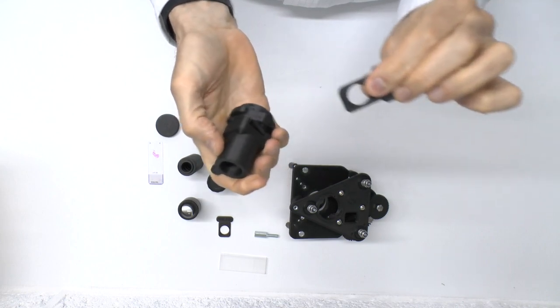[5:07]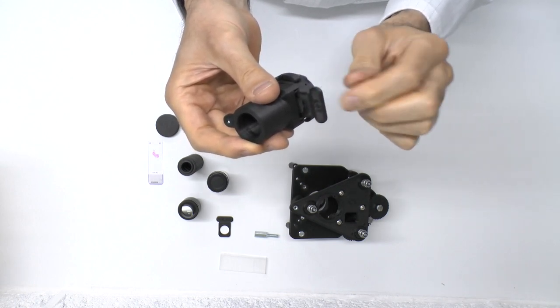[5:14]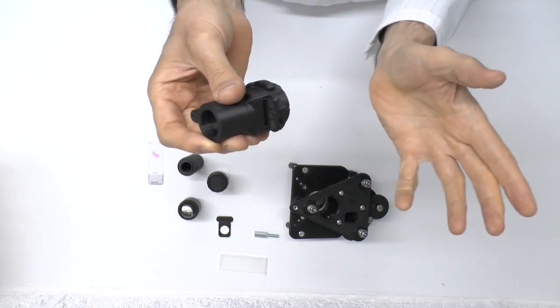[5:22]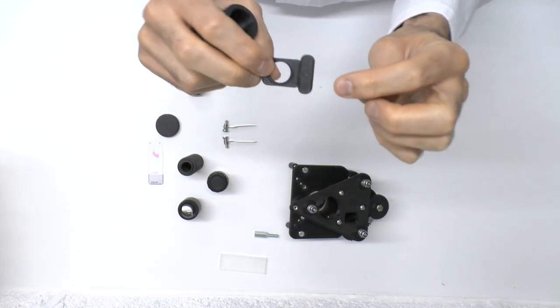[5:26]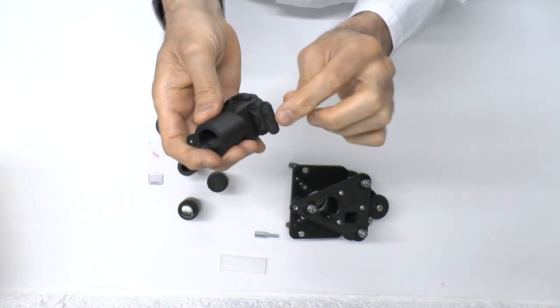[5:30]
So the one with the marking is top, so that has to go facing the top side, and you put the bottom filter in first, because then you can rest that on the quick release part here. That goes in. Be careful not to move it so it crosses up onto the upper slot. Clicks in place. And once that's in, it's relatively easy to put the other filter slot, again, correct side facing up, into the top slot and clicks in place.
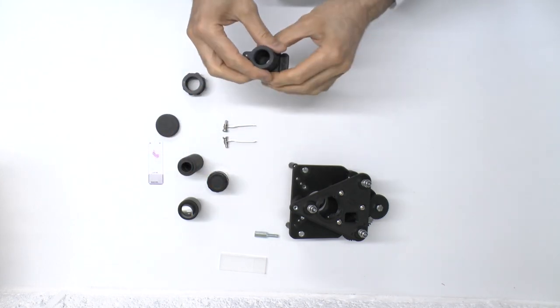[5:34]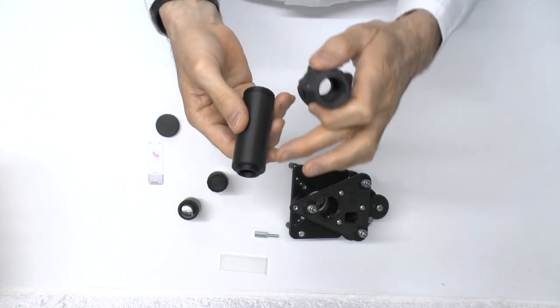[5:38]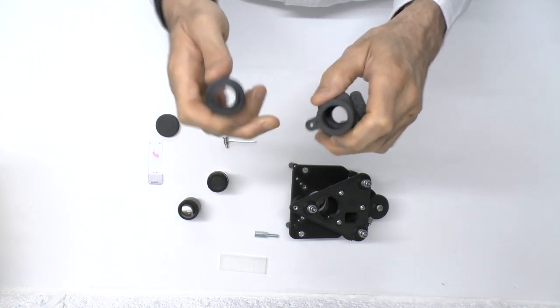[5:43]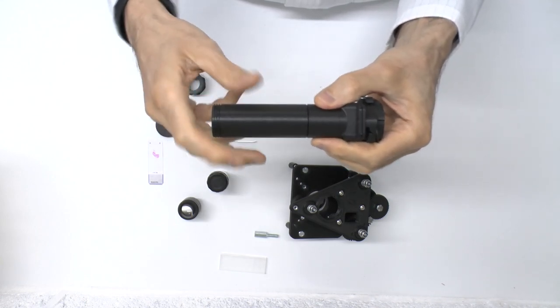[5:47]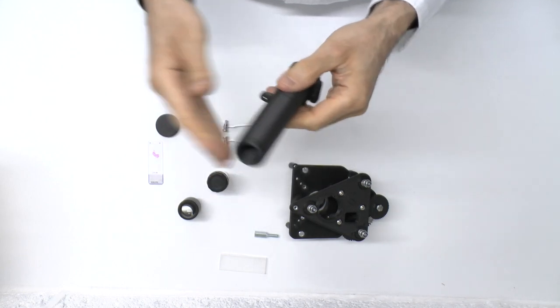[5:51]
That's done. Now we'll take the monocular tube, and there's a wide thread at one end and a narrow thread at the other end. The narrow thread goes into the top of the filter block. So like this, finger tight, doesn't have to be too tight.
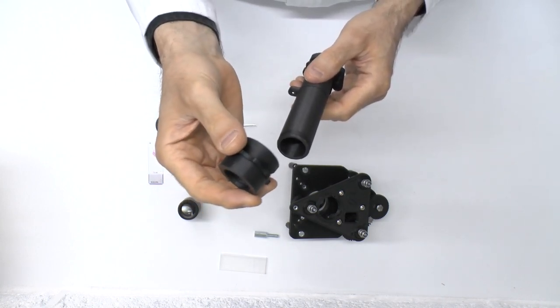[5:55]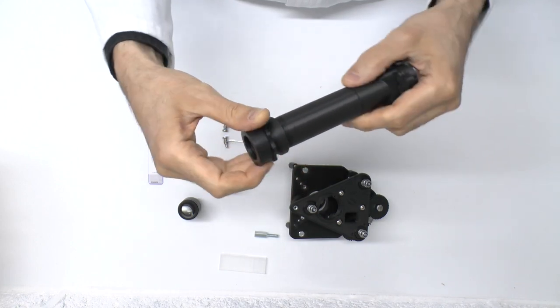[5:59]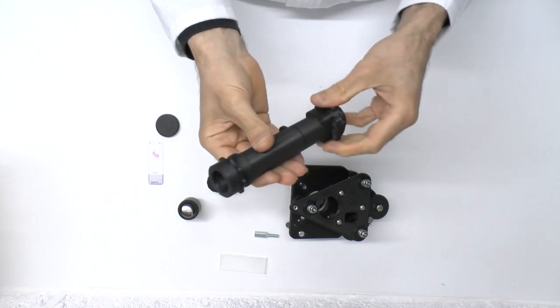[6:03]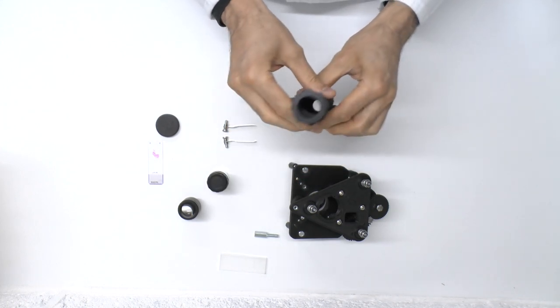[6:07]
And then on top of that comes the ocular lens holder, which is already partially assembled for you. That just screws on here. So now you have your optical tube. The only thing that's missing are the lenses, so we'll add those now.
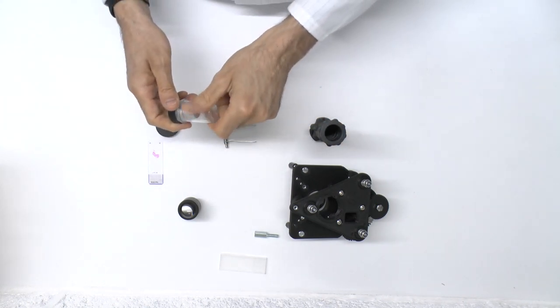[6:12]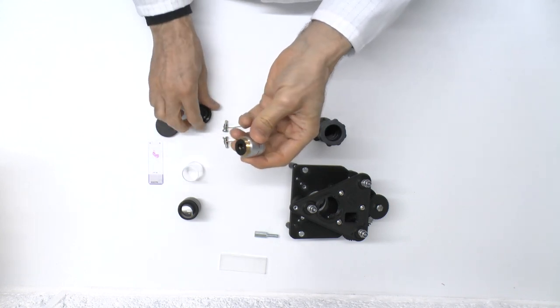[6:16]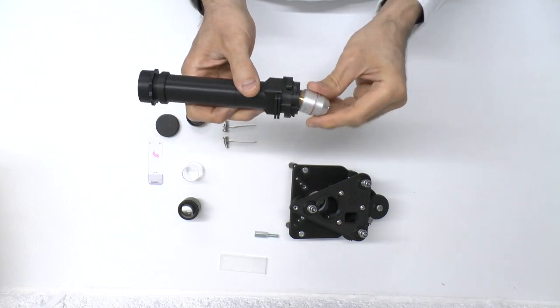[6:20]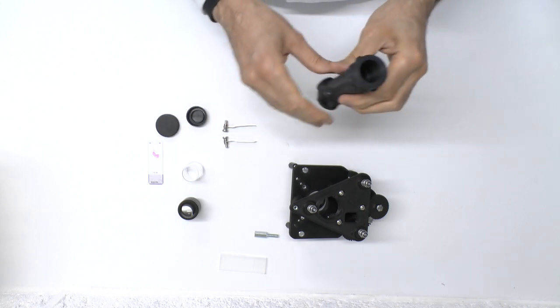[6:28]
Take the objective out of its holder. That threads into the RMS thread here. Be careful not to cross the thread. There we are. And then finally we have the ocular lens.
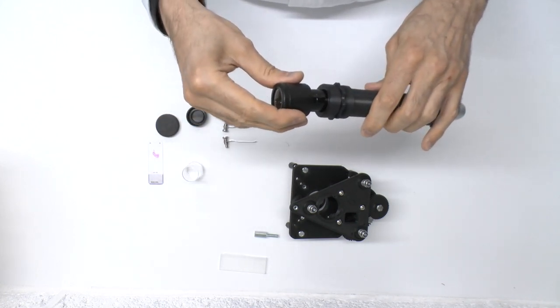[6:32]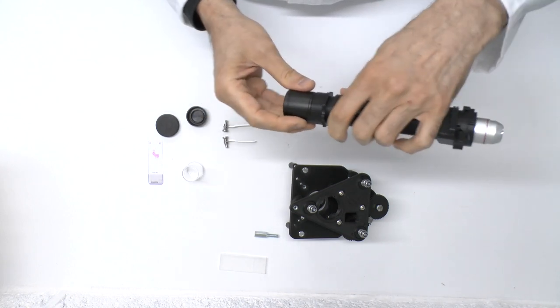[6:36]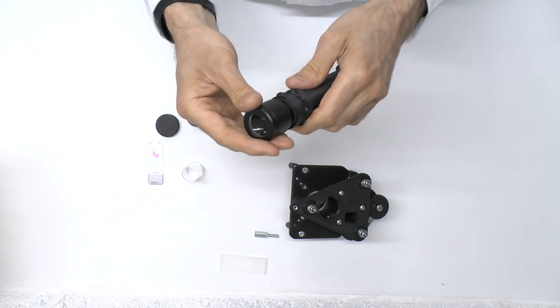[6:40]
Now this could be a little bit loose. It will fit, but it can be a bit loose. It might fall out if you turn it upside down. Okay, so be careful once you put that in. It just rests on the shoulder like that.
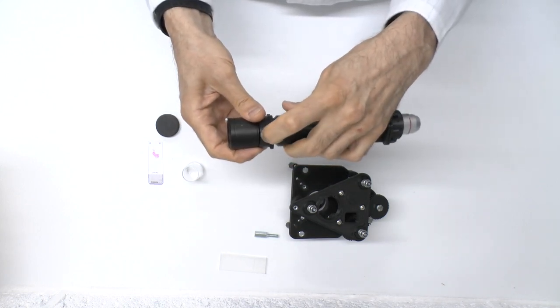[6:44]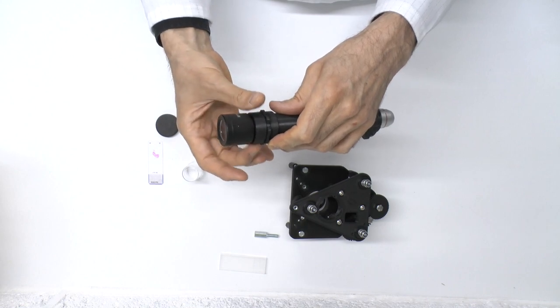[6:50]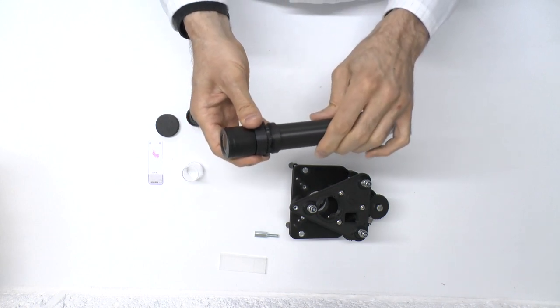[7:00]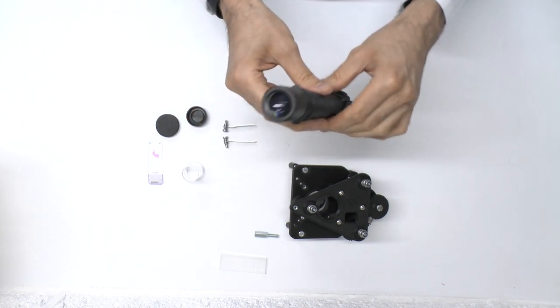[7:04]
You can adjust it up and down with this ring nut here, move it down. Then you can screw the top bit down, and then this can go further down. Screw it up and then lock it in place with a lock nut there. So you can adjust that as required. It should come pre-adjusted to the correct level if you're using the scope without any filters.
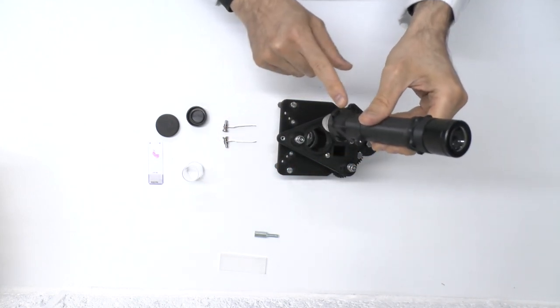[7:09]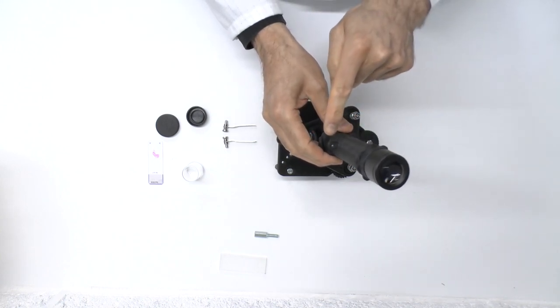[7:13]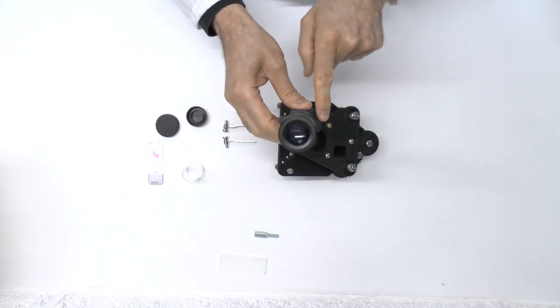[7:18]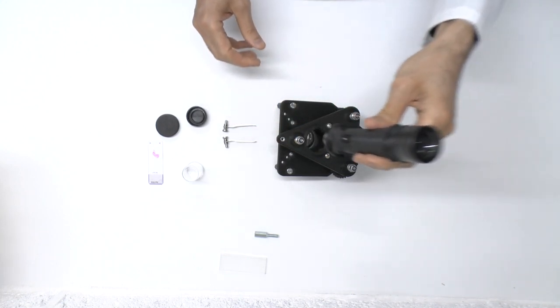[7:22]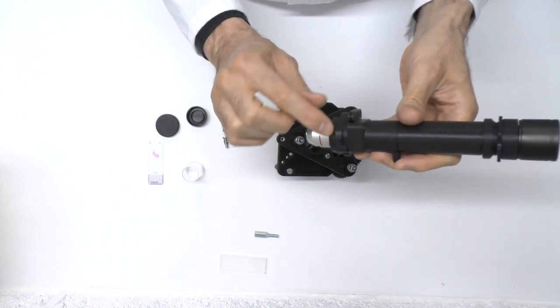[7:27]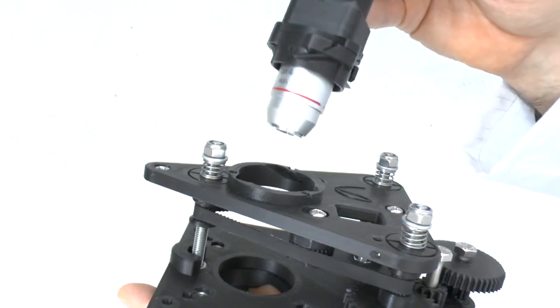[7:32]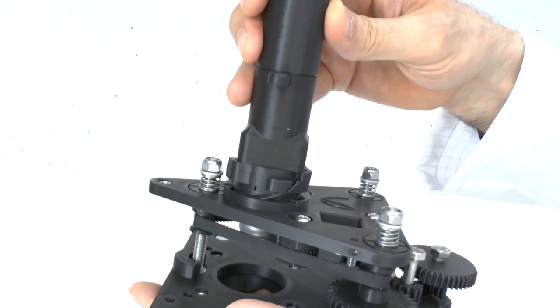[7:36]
So once you've got that in place, we now fit the optical tube onto the stage, and we do that noting that this lug faces forward and the filters face the back. The back is where the focus controls are. Now you can't just plonk it in like that, it's a rotating connection. You can see the threads here. So what you do is you put it in at 90 degrees like this, make sure it's flat against the base, and then you rotate it and it will lower down and click in place.
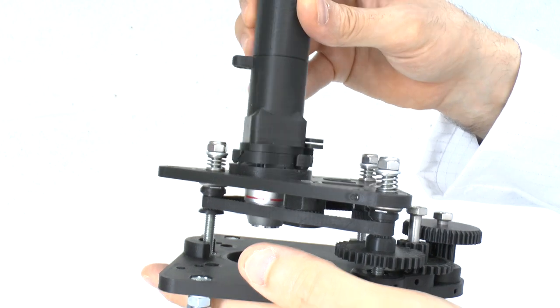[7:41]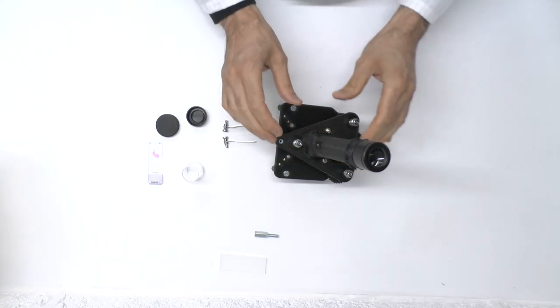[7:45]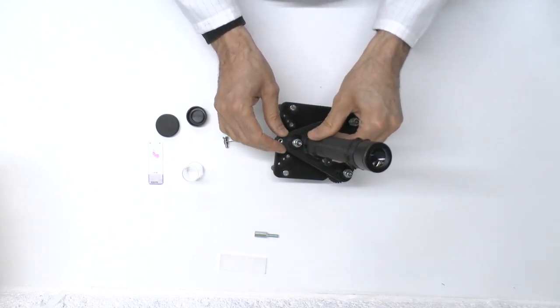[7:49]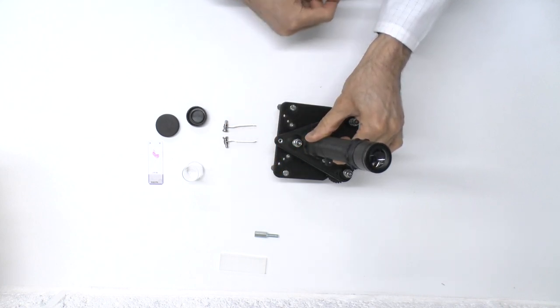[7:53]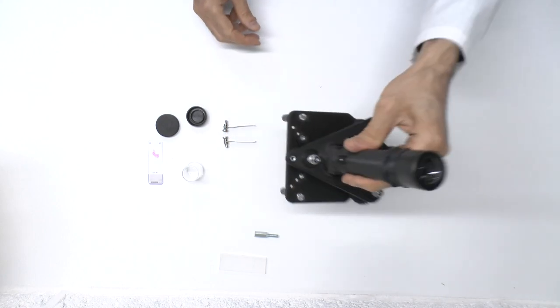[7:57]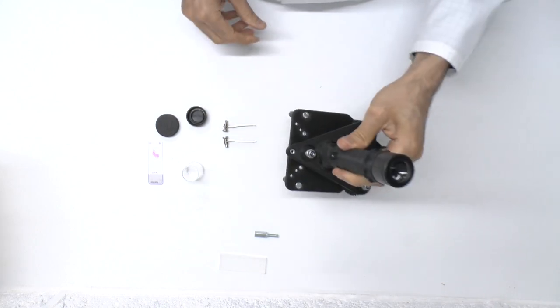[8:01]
Not a very sharp click, but it is a definite click. Be careful when you're doing that not to cross the threads. That's why you have to make sure that it's flat and against the base when you're putting it at 90 degrees. Rotate, it should easily click in place, and that's solid. Don't turn it upside down because this may fall out, okay?
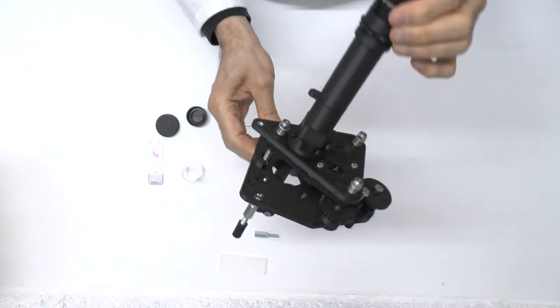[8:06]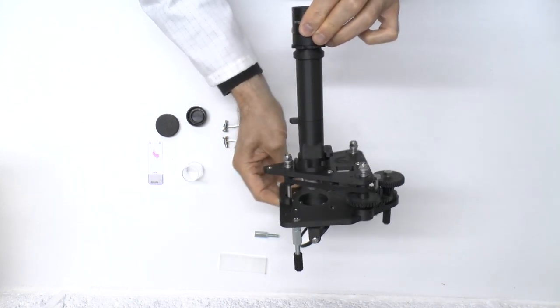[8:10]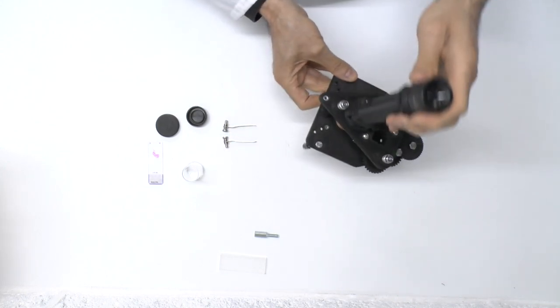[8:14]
So there's your microscope, and I'll hold on to the ocular lens, show you from the side. So that's how it is. Now it's properly assembled. It won't be in focus, but it's properly assembled. We'll get the right focus once we have a specimen in place.
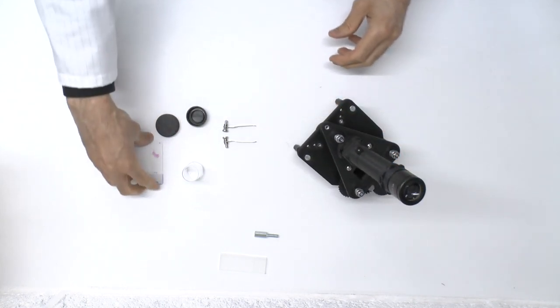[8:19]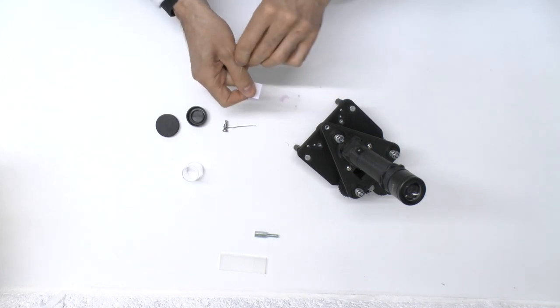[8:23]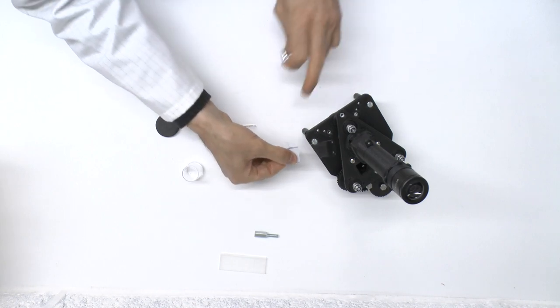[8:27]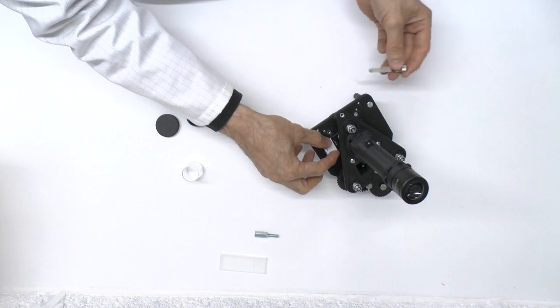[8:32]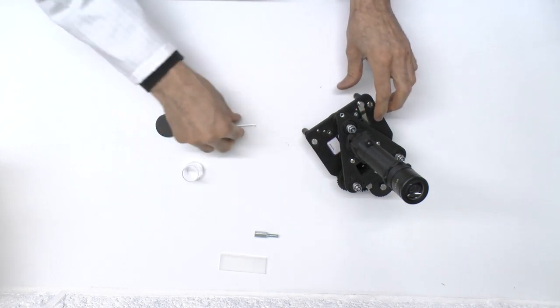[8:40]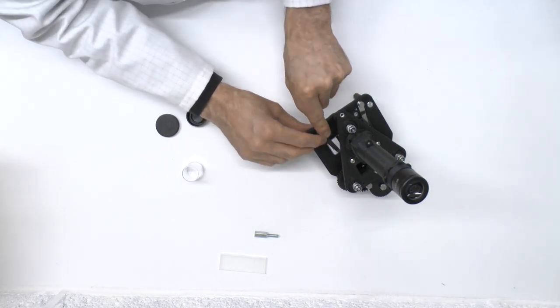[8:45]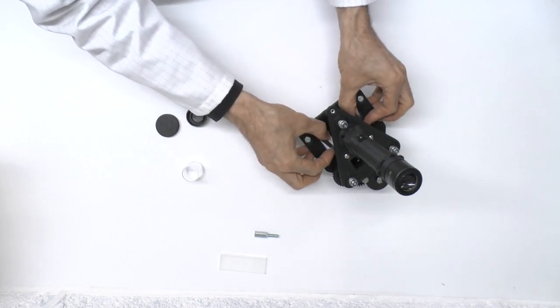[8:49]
So get your specimen and get your stage clip. Be careful when you're putting the specimen on the stage not to let the glass touch the objective. So rest it on the stage, slide it across like that. Then put the stage clip in its hole and press it down, and that will hold it in place. And use the other one in its hole there, press it down, that will hold it in place, and that's now held in place. You can move it around a bit, slide it around.
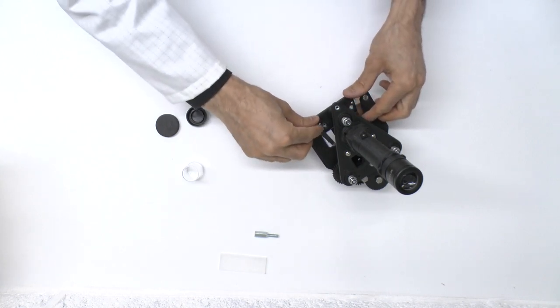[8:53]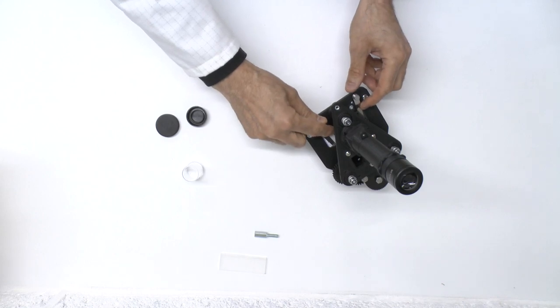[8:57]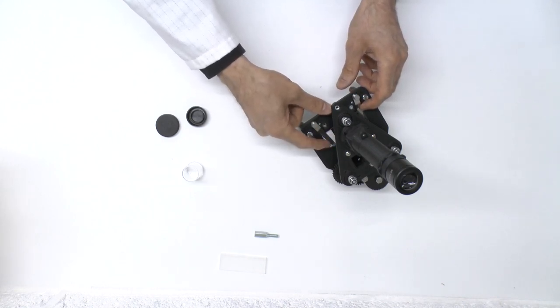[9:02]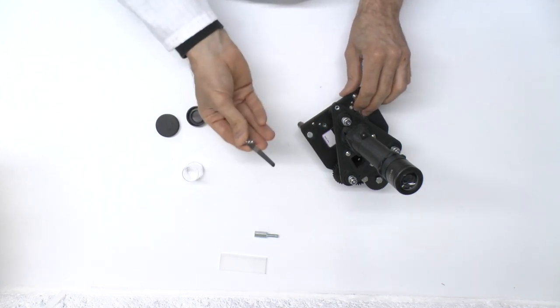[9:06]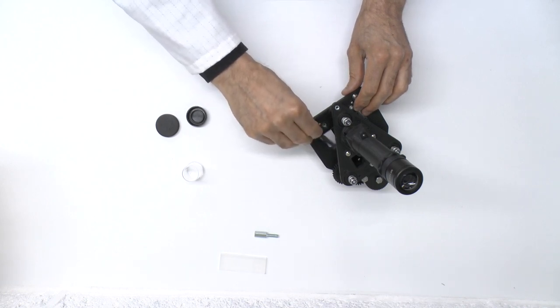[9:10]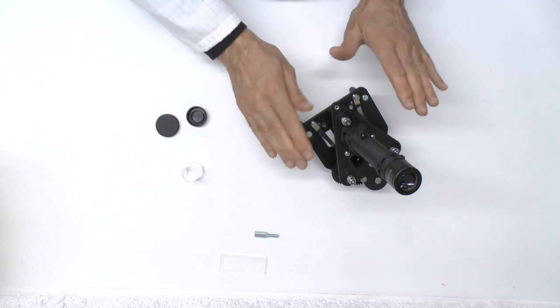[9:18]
The reason I did it this way is because if you try to put the stage clips in first and then rotate them onto the slide, the metal of the clip can scratch against the edge of the slide and cause fragments of glass. So I prefer to lift the stage clips in and out rather than turn them around. Okay, so I put it in with it on the slide and then I push it down. The springiness of the clip will hold it in place.
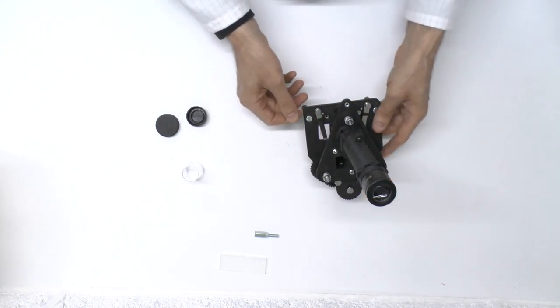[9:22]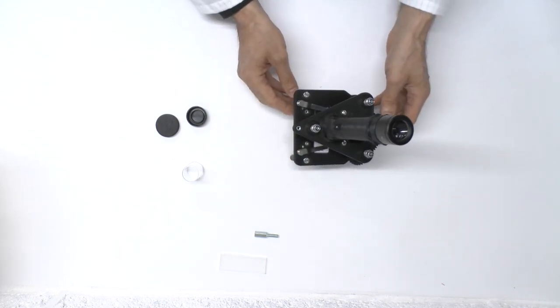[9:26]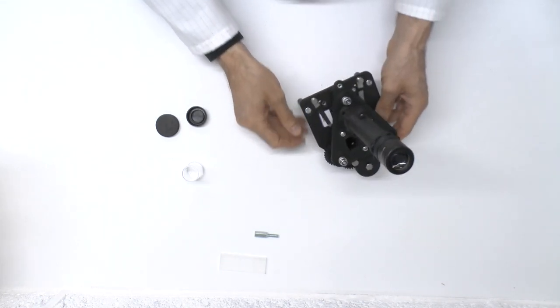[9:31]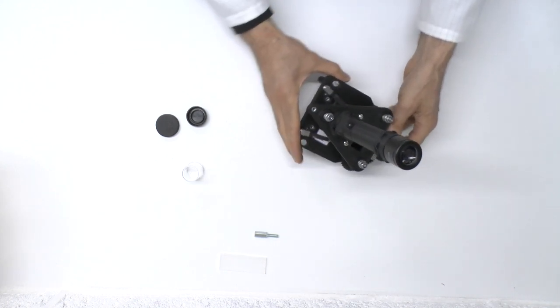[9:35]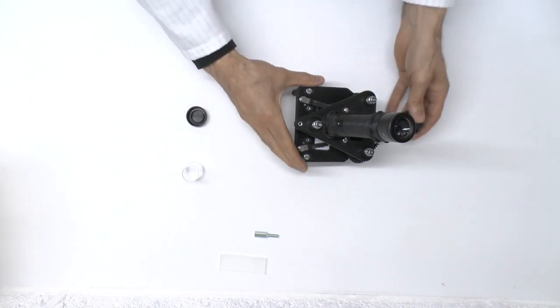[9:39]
And that's that. So you will find a good light source, a diffuse light source such as a cloudy sky, and then adjust the focus until your slide is in focus. And that's essentially how you set up the PUMA foundation scope.
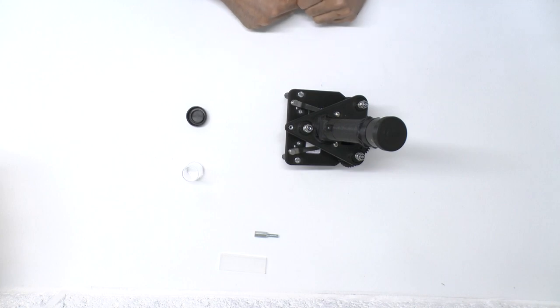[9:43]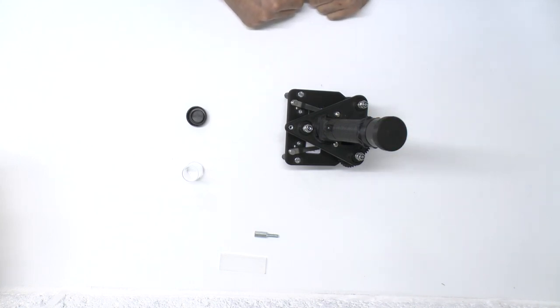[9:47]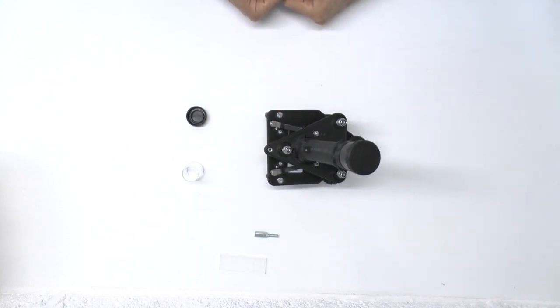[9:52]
This is your lens cap. It's a passive cap, just goes on the top, so when you're not using it for any period of time, prevent the dust from going on like that. So that's how you set up initially your PUMA foundation scope.
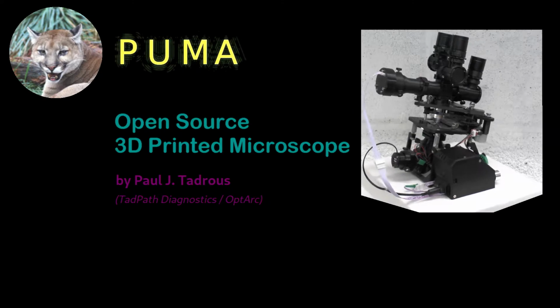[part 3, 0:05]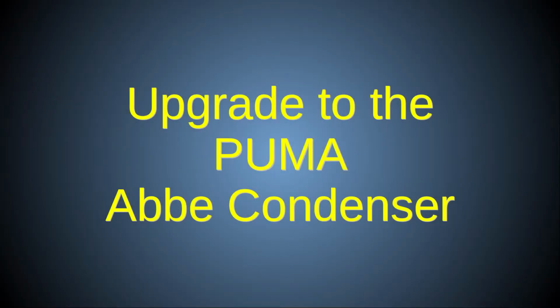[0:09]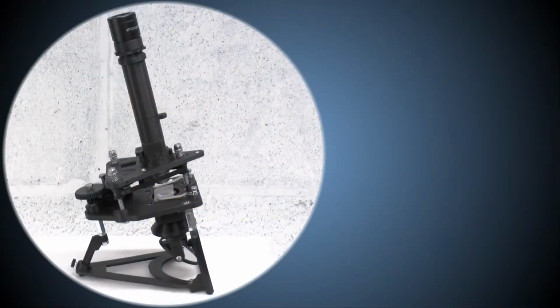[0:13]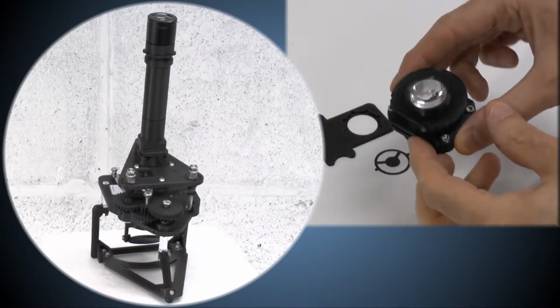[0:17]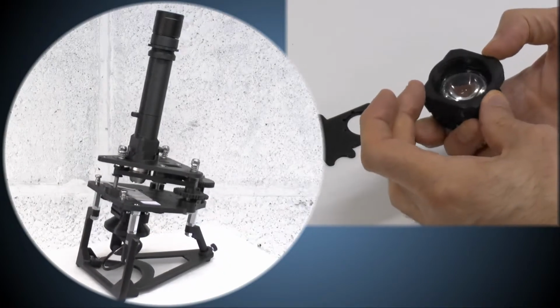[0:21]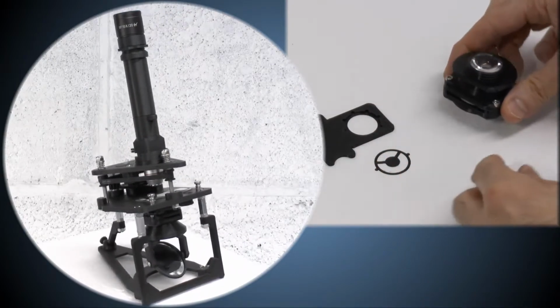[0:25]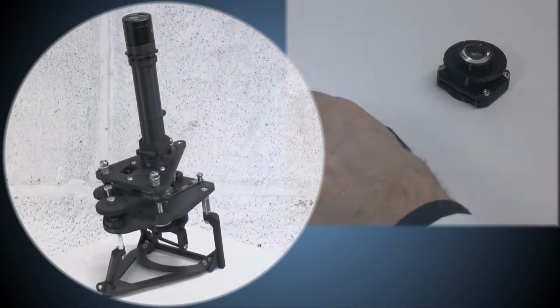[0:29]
In this video, I'll show you how to build the PUMA Abbe Condenser and fit it to a PUMA foundation scope. The Abbe Condenser lets you use higher magnification objectives and specialist forms of microscopy like dark ground illumination and Schlieren phase contrast.
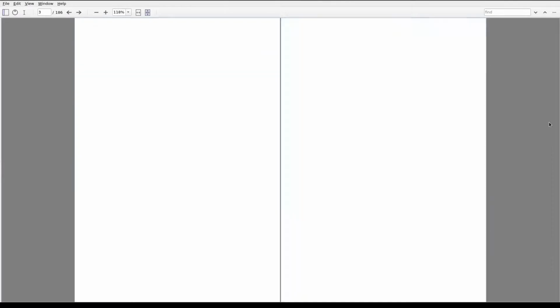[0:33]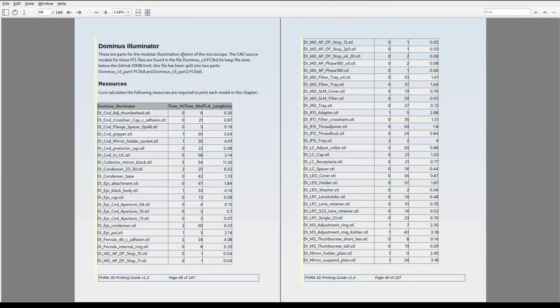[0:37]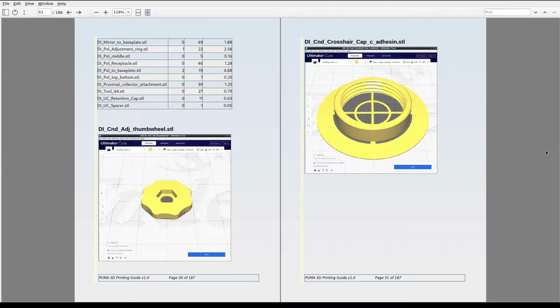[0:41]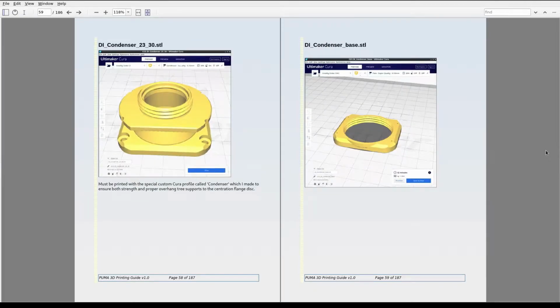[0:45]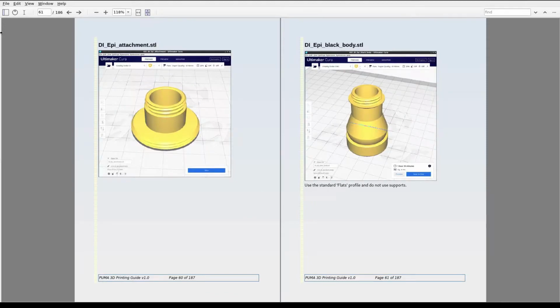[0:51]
This is the first in a series of videos that document the PUMA illumination system. The illumination system comprises a large set of many options, and so it was given its own development name, the Dominus Illumination System. For that reason, you will see that all the PUMA CAD models pertaining to illumination are prefixed with DI, which stands for Dominus Illuminator.
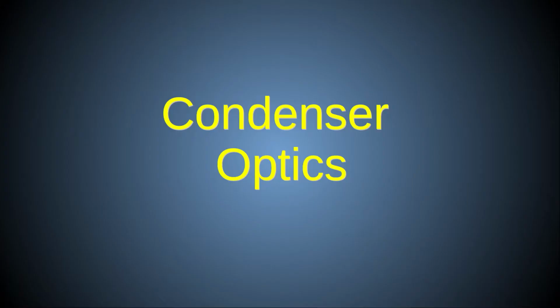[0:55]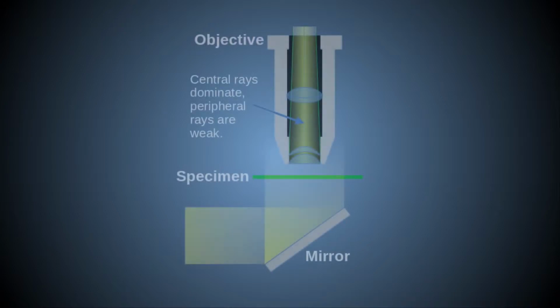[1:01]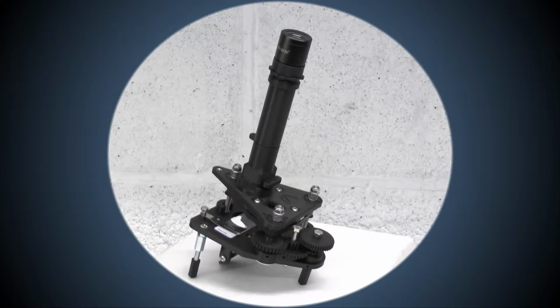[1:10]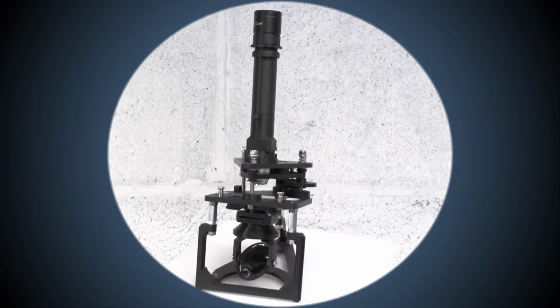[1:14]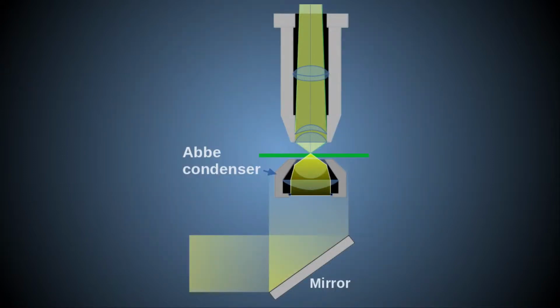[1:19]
The PUMA foundation scope has a mirror illuminator only. There is no substage lens system. This means that it can only give good quality images with relatively low magnification objectives. To see well with high magnification objectives, you will need to add a condenser lens system to the illumination path.
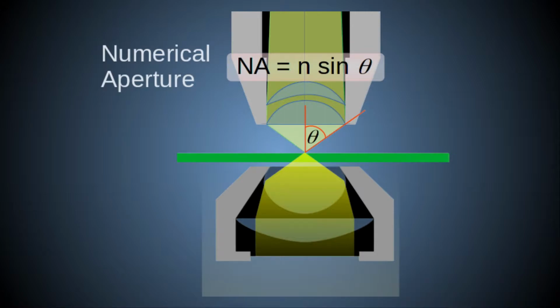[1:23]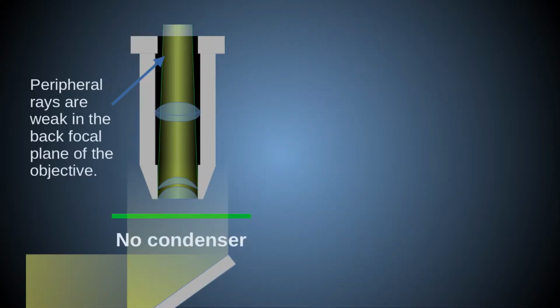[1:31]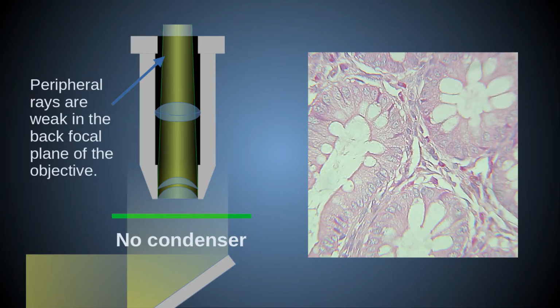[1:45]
Higher magnification objectives have higher numerical apertures, so they accept light from a large range of angles. Light that enters at a higher angle encodes higher resolution features. So, such objectives need strong light coming in at all angles to give the best quality image. Failure to provide this results in an image that looks over-contrasted and lacking in resolution, with diffraction ringing artifacts.
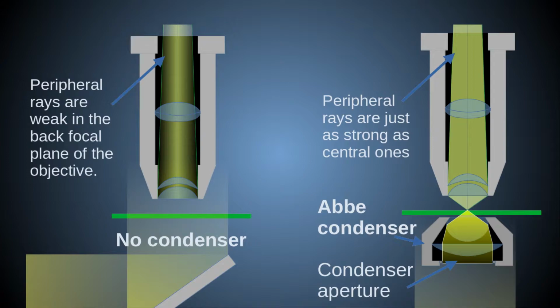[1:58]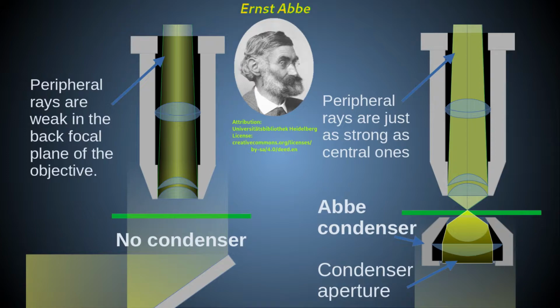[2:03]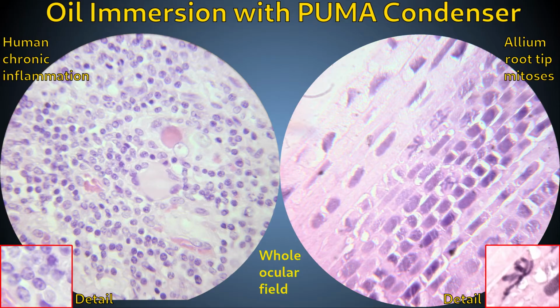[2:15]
A reliable way to concentrate the incoming light into a wide-angled cone beam is by means of a two-lens condenser system originally devised by Ernst Abbe at around 1870. The open-source PUMA system has its own version of an Abbe condenser with a numerical aperture of about 0.938. The PUMA condenser can also be oiled for use with oil immersion objectives, allowing for a useful magnification of up to 1,000 times when used with a ×10 eyepiece.
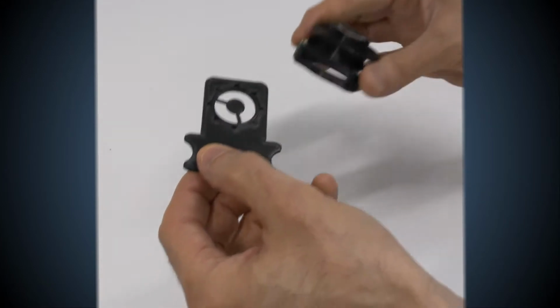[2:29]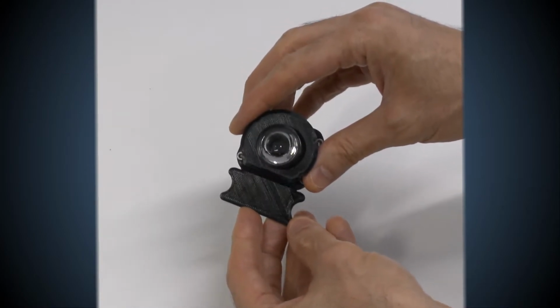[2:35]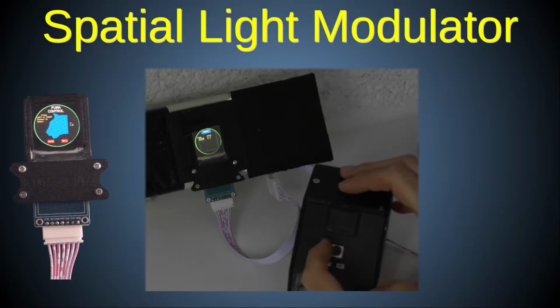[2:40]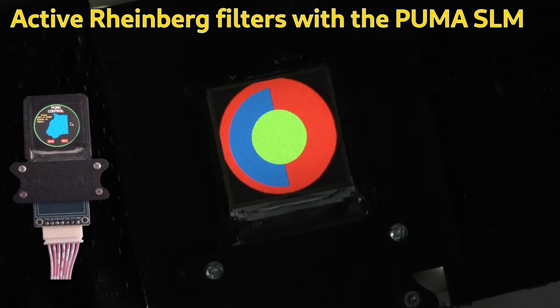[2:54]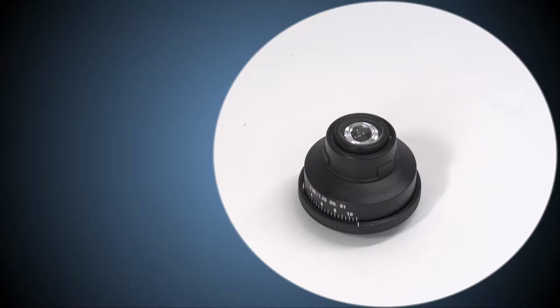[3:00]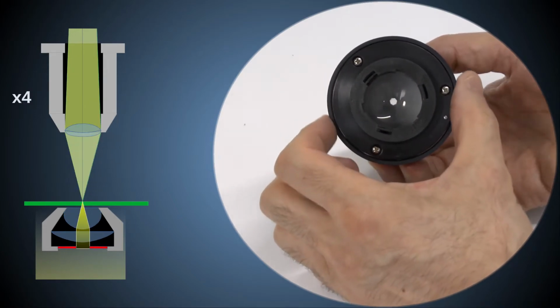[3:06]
The PUMA condenser module also has the advantage of easy access to the condenser's Fourier plane by means of a filter slot mechanism. This allows the use of custom filters or the powerful TFT screen-based spatial light modulator to shape the condenser's aperture. This makes it easy to achieve dark ground illumination microscopy and Schlieren phase contrast, which I will illustrate towards the end of this video. Most other microscopes have only a simple iris diaphragm for the condenser to vary its numerical aperture to match the numerical aperture of the current objective.
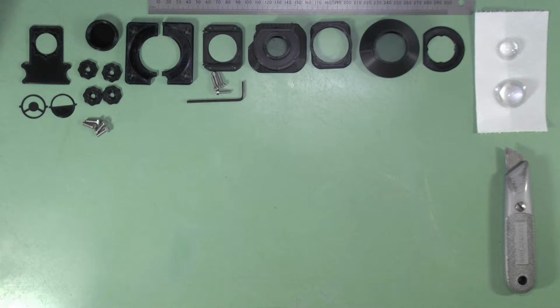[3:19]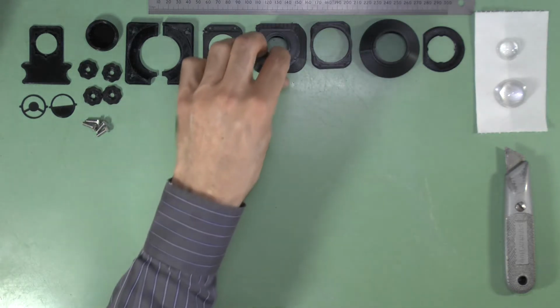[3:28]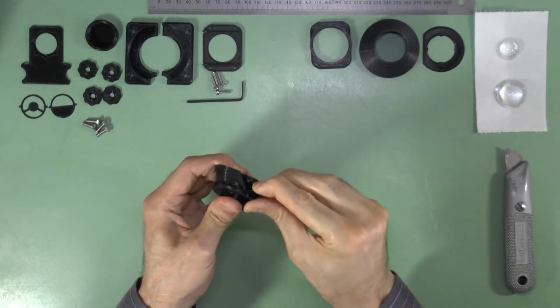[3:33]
These are the parts and some of the tools you'll need to build the PUMA Abbe condenser. Details are provided in the video description. First, remove any support structures and other 3D printing artifacts from the parts.
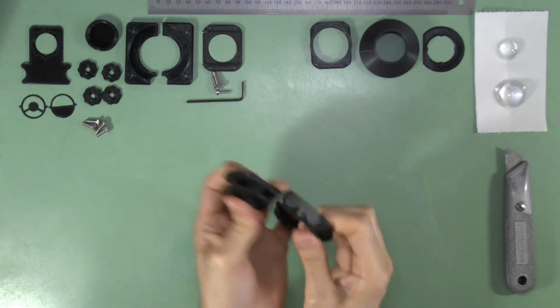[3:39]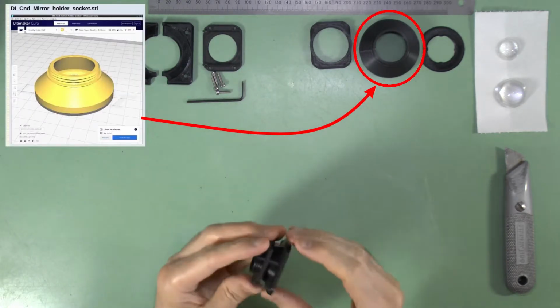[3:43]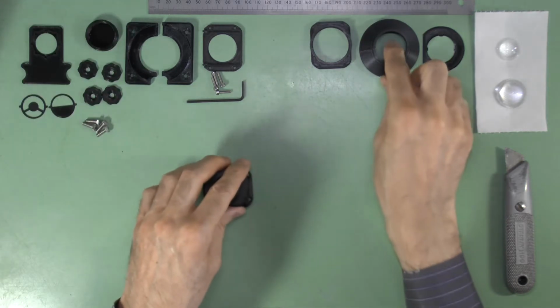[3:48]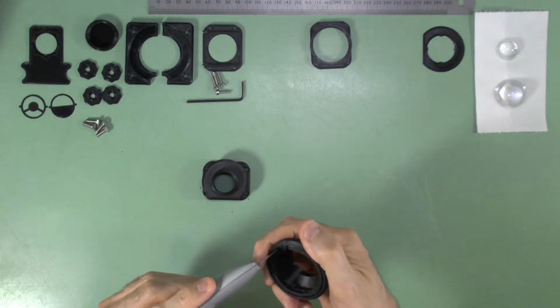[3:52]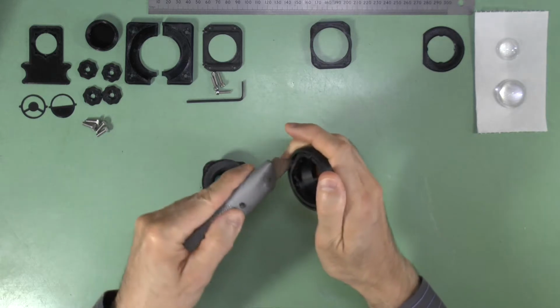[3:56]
Note that when printing the models, you have a choice of two condenser interface adapters. I include here the condenser to mirror holder socket adapter, because today we are interfacing the condenser to the mirror holder. However, if you wanted to use the condenser with the Köhler illuminator, you would instead print the condenser to upper collector adapter.
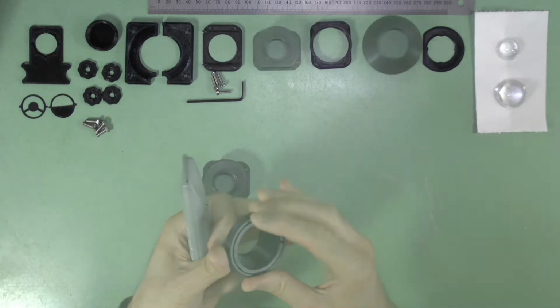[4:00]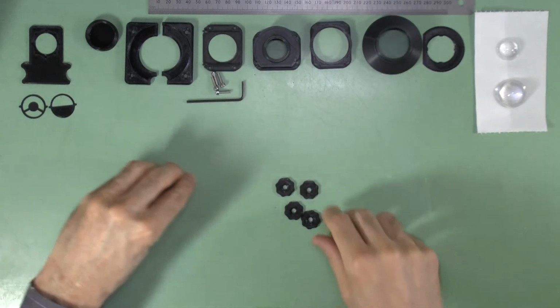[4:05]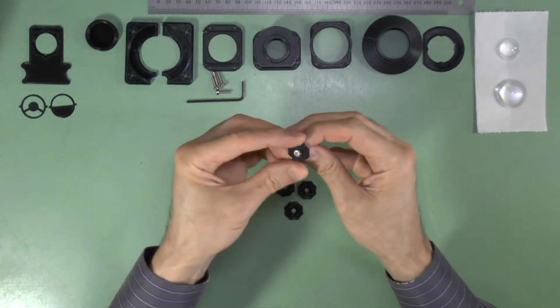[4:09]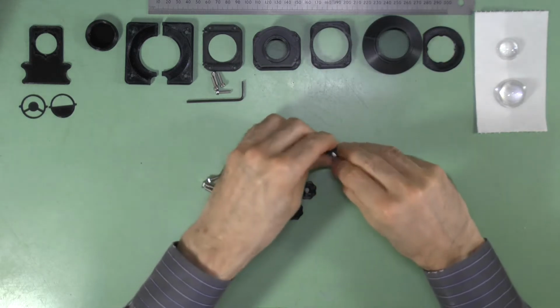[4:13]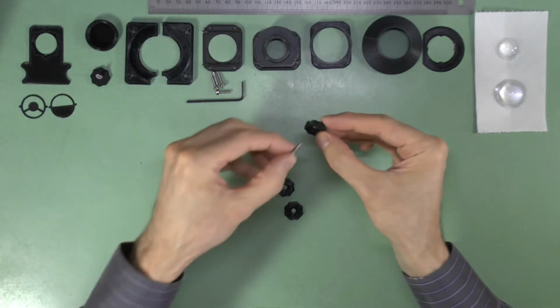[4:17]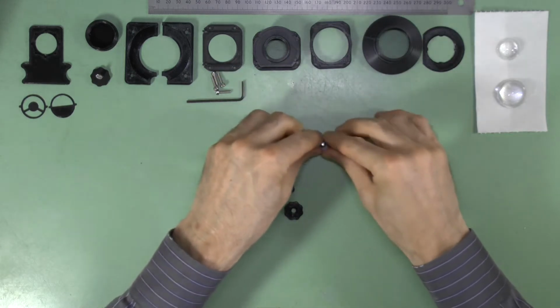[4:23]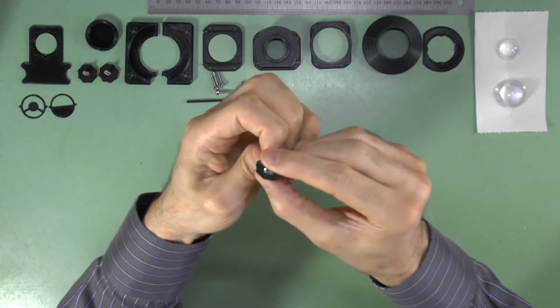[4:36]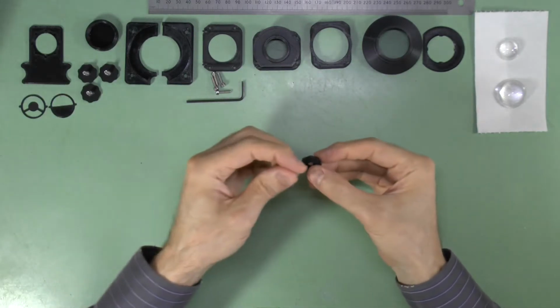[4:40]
Now prepare the M4 thumb screws by simply pressing a 12mm long M4 hex bolt into the 3D printed thumb screw head. You will need a total of 4 M4 thumb screws to fix the condenser to the stage, but if you are upgrading a foundation scope, you can use the 2 pre-existing M4 thumb screws and just add 2 more. These condenser thumb screws do not have a nut on the other side of the thumb screw control to fix it in place, so there is a chance that you will dislodge the plastic control from the bolt during use if you press down on the plastic part while using it, so try to avoid doing that.
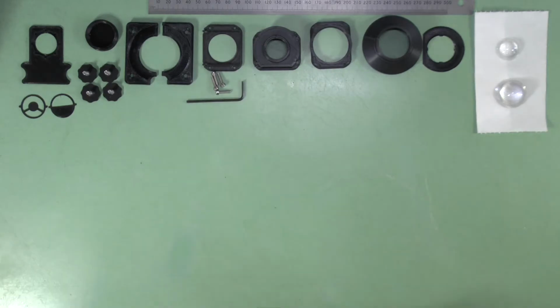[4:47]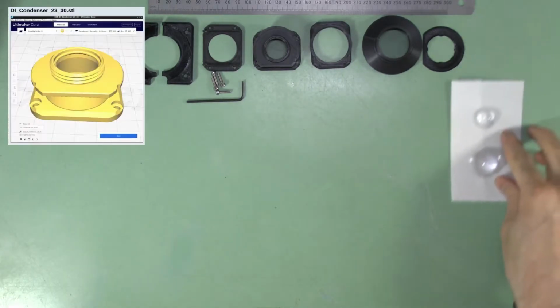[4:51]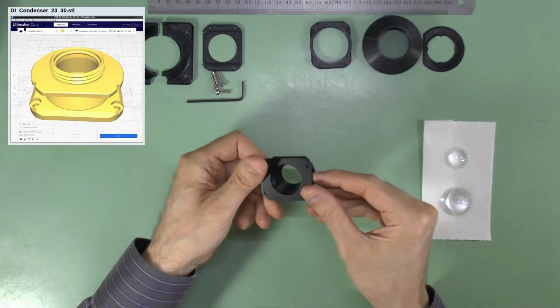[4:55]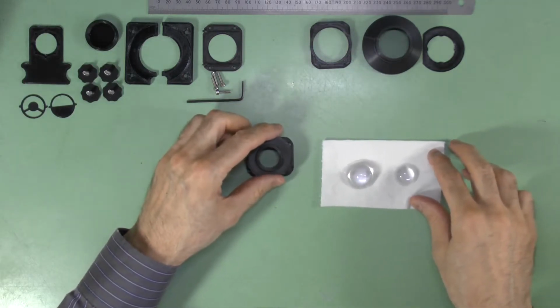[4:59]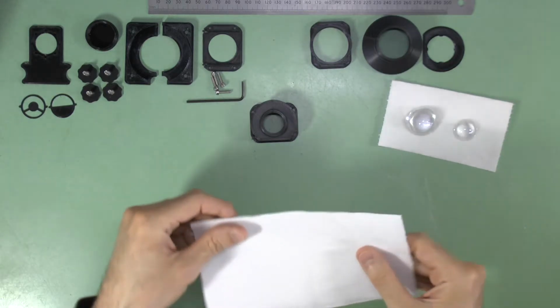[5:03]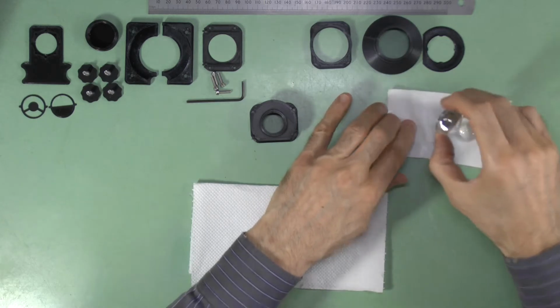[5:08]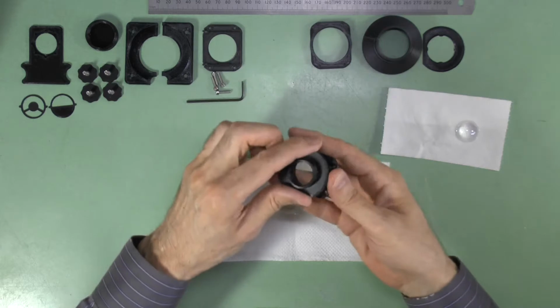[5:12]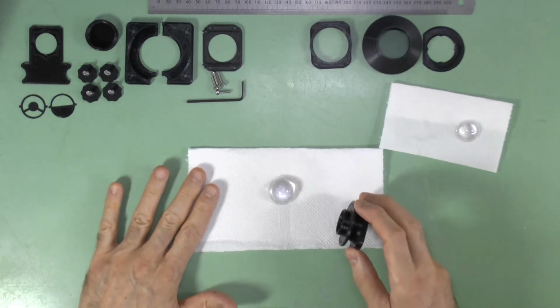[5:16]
Now insert the lenses into the condenser 2330 lens holder using the procedure I will show you. Ensure you work on a clean, soft surface to avoid scratching the surfaces of the lenses. I use a paper towel on the work surface to help with that. During assembly, you will need to press down quite hard on this work surface, so ensure it is strong enough and won't crack or damage under pressure.
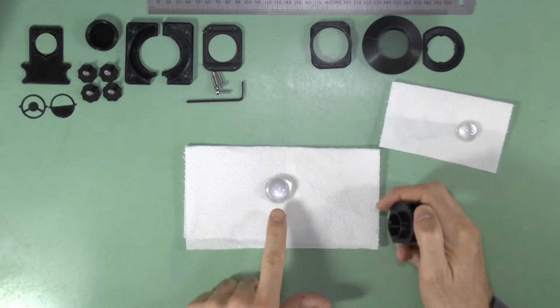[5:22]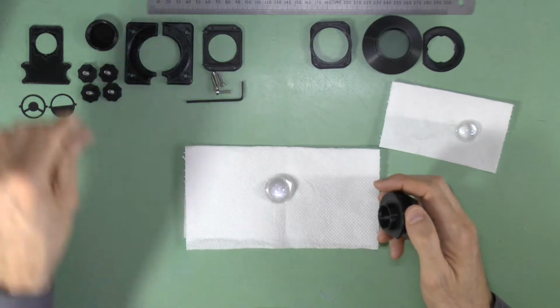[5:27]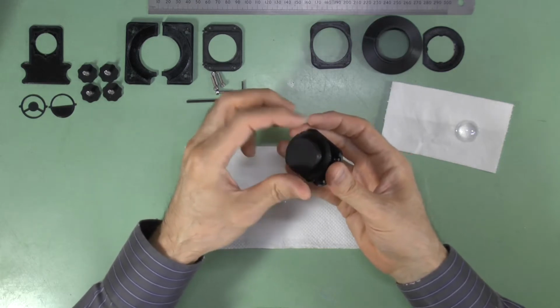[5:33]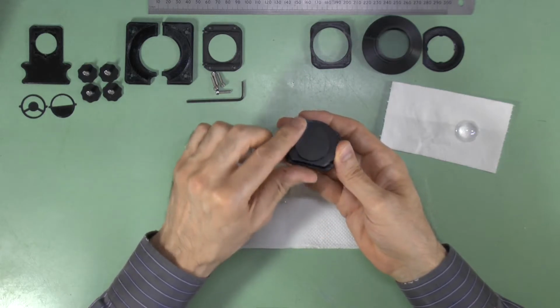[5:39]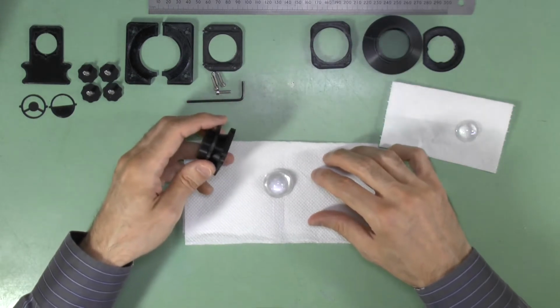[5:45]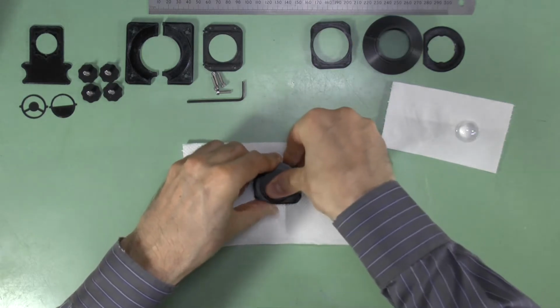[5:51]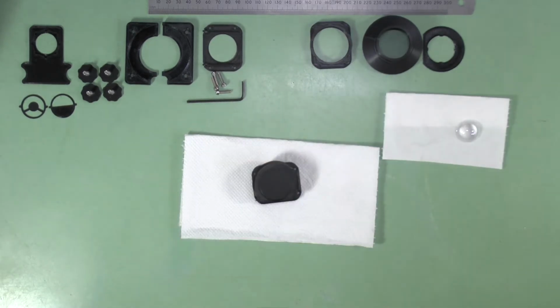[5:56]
First, lay the 30mm lens flat side down on the work surface. Screw the protective cap onto the 23mm surface of the empty lens holder to give you a broad flat surface to press on, as you do not want to damage your fingers by pressing on the thin rim of this part of the lens holder. Put the empty lens holder over the lens and push down firmly and evenly all over to force fit the 30mm lens into the recess.
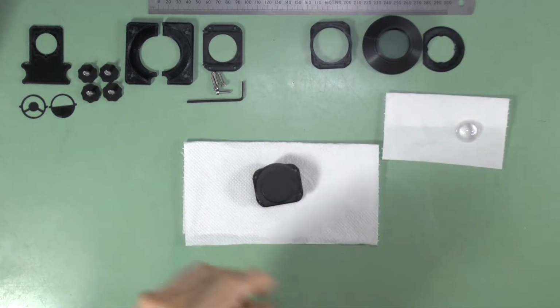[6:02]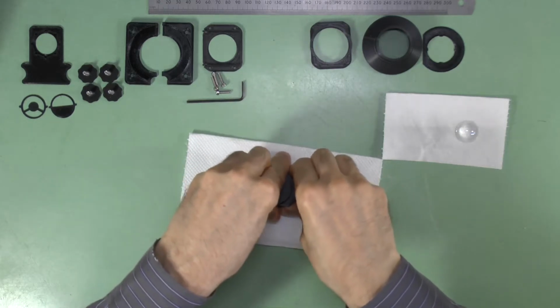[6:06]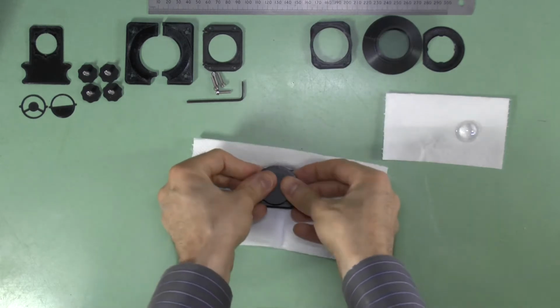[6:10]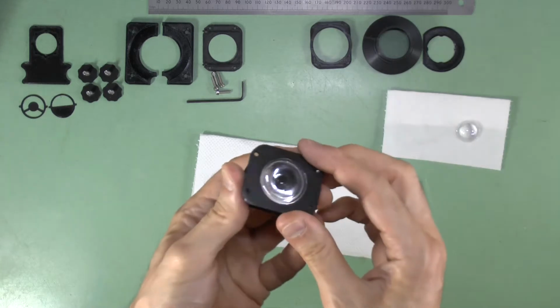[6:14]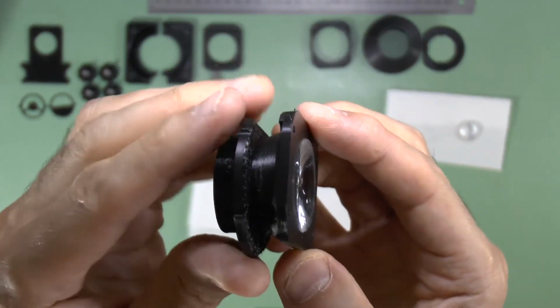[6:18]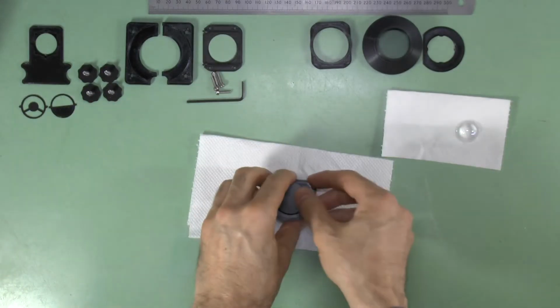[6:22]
You may need to use some padding on top to prevent hurting yourself due to the pressure. Note that the 30mm lens will only go part way into the recess. About half a millimeter will stand proud of the lens holder surface. Check that an equal amount of lens glass protrudes all around the circumference and, if it is not even, lay the assembly flat and apply directed pressure to the more proud part to even it out. If this doesn't work, remove the lens and start again.
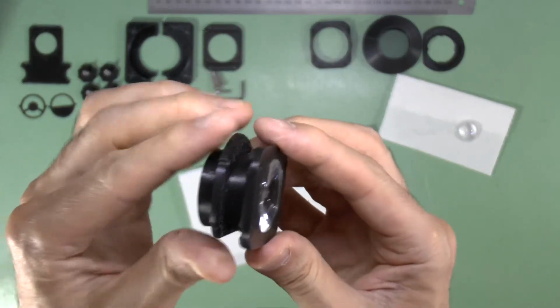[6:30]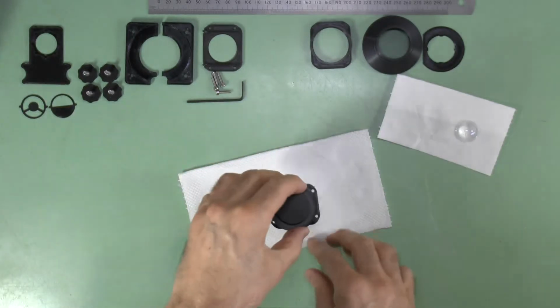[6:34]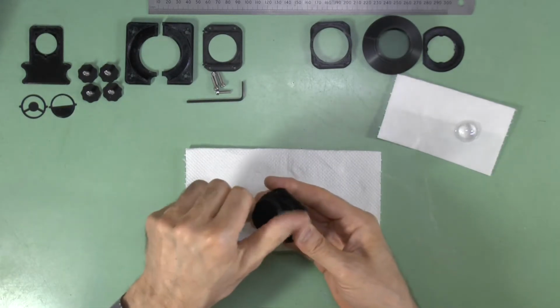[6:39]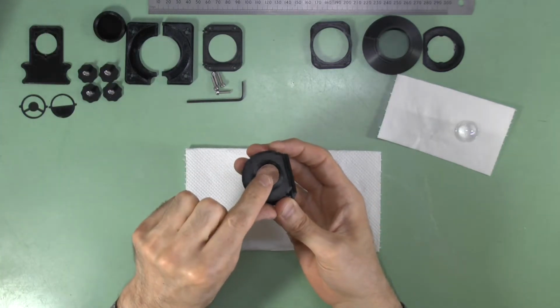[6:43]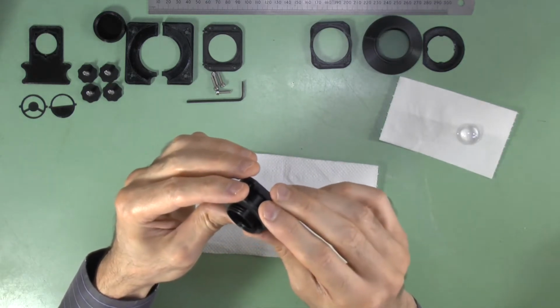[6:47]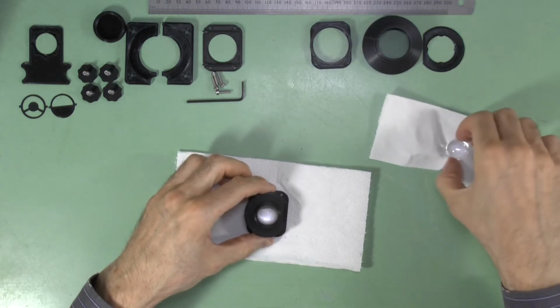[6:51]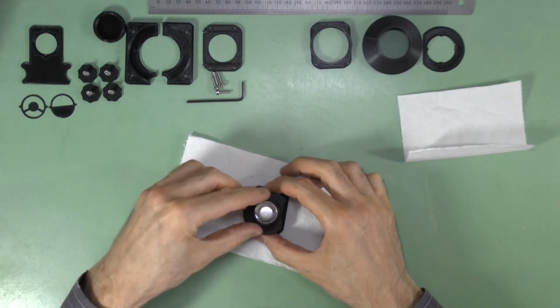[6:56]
Once the 30mm lens is firmly and evenly fixed in place, ensure the lens holder cavity and the convex parts of both lenses are clean and free from any dust, fingerprints, grease, stray plastic, etc. You won't get another chance to do this. Then insert the 23mm lens into its recess as shown and press firmly to get it in evenly.
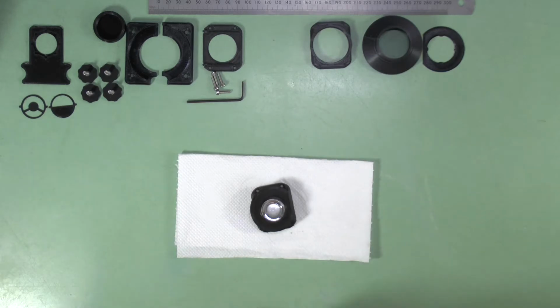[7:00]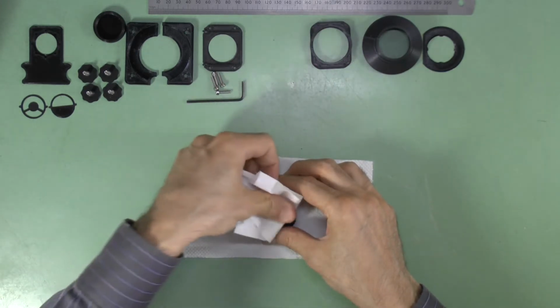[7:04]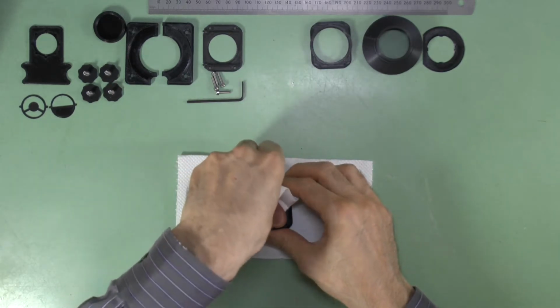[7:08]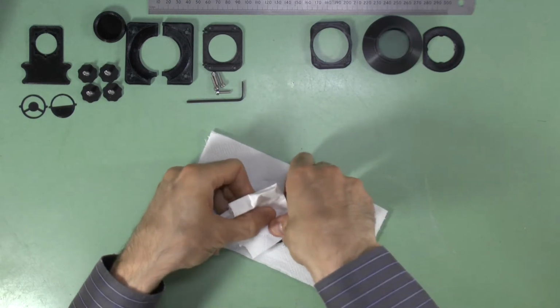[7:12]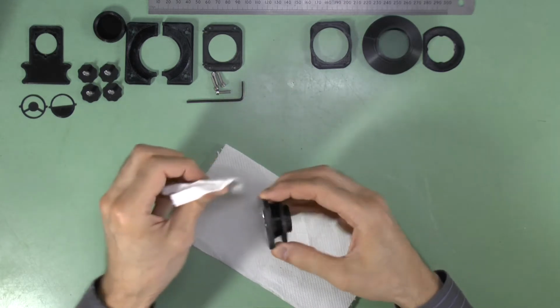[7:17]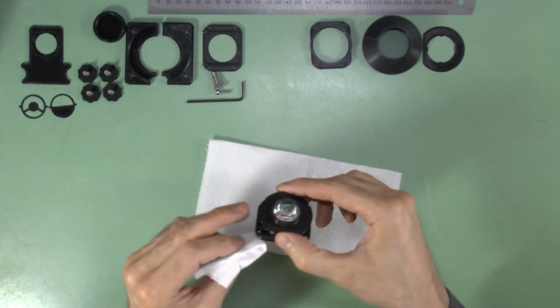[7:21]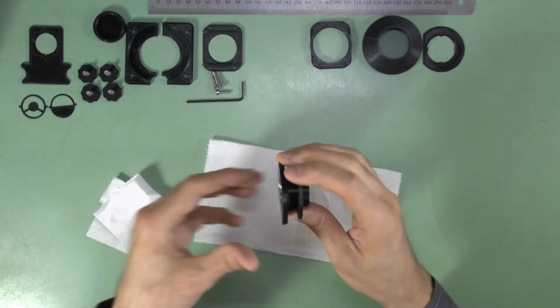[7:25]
Be advised that in my experience, this force-fit assembly is a permanent fixture. You can only remove the lenses by heating and deforming the plastic to get them out. For example, by placing the whole assembly into a dish of hot water to soften the plastic, and use protective gloves when distorting the lens holder due to the heat. You will then need to reprint the Condenser 2330 lens holder to attempt reassembly.
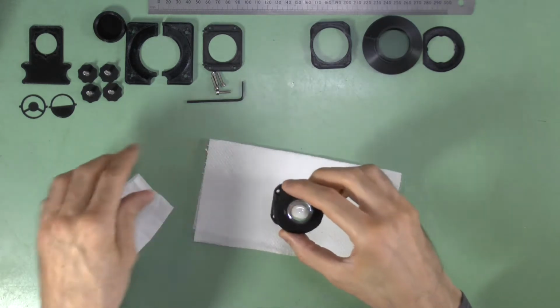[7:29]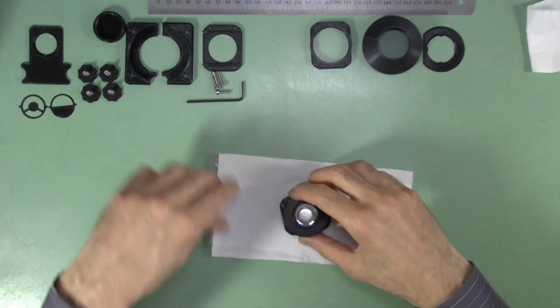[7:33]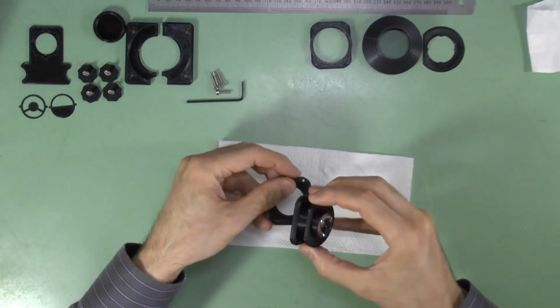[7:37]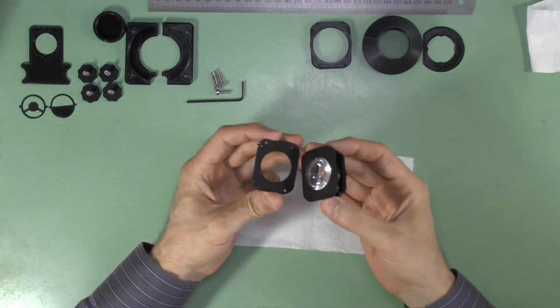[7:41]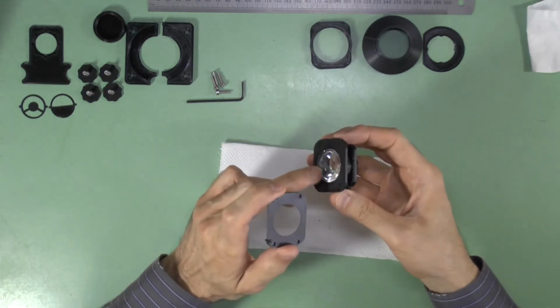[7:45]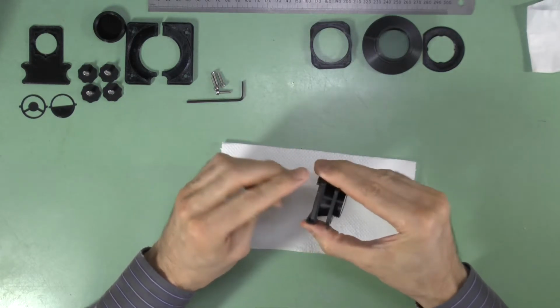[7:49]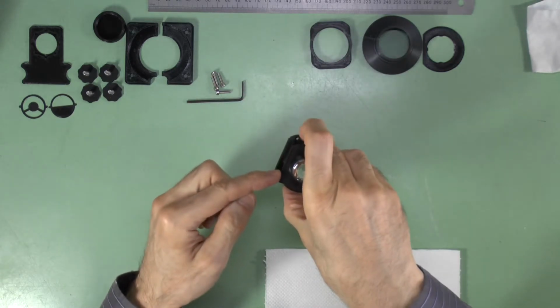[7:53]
Now screw the other parts of the condenser assembly together with the four M3 screws. Take care to get the filter tray the right way up and facing the right direction. This is with the thin membrane of the filter tray in contact with the glass of the 30mm lens, and with the opening of the filter tray facing the same direction as the flattened part of the flange of the lens holder.
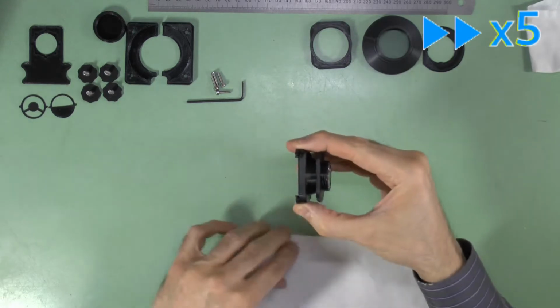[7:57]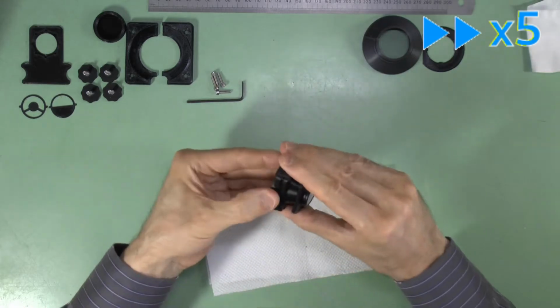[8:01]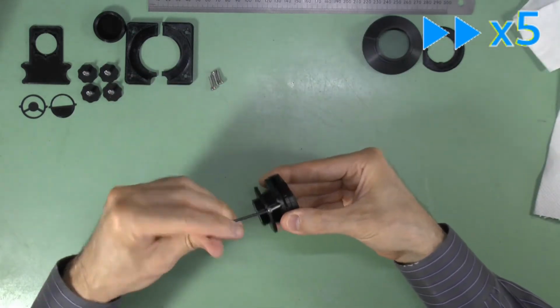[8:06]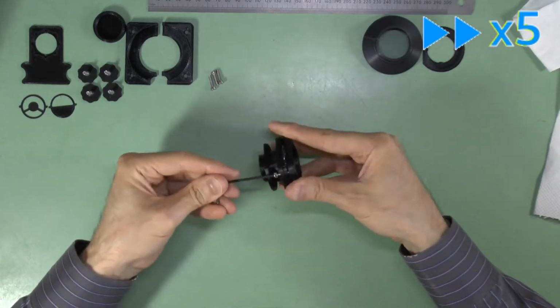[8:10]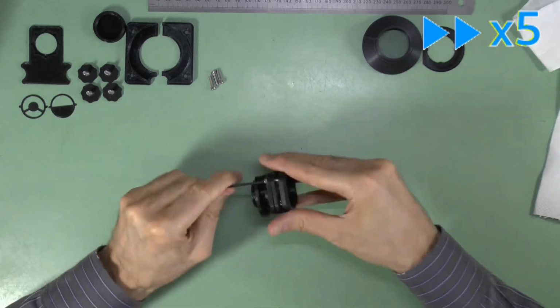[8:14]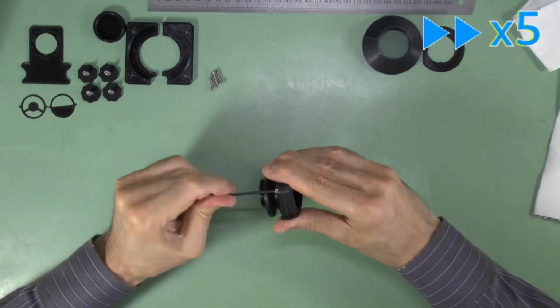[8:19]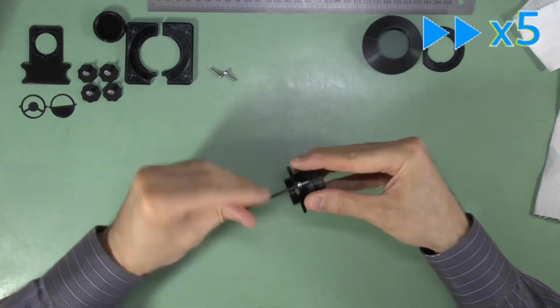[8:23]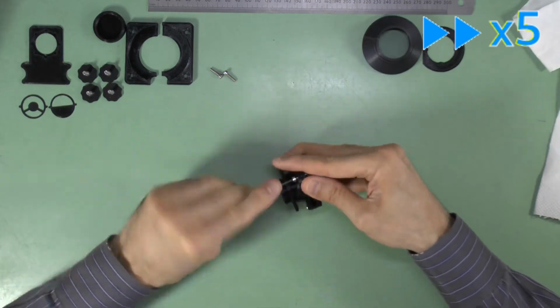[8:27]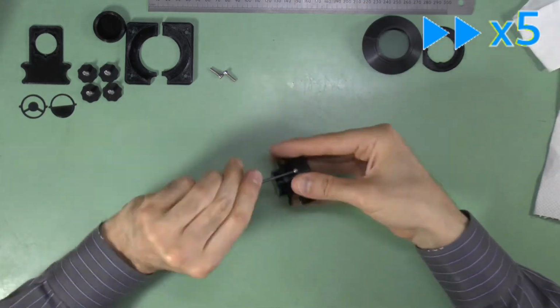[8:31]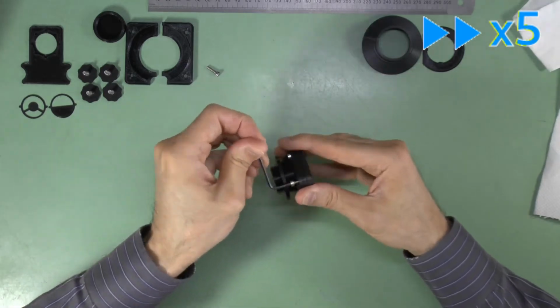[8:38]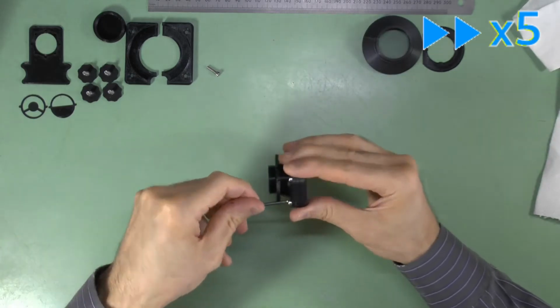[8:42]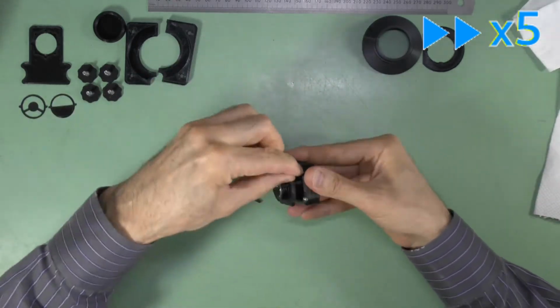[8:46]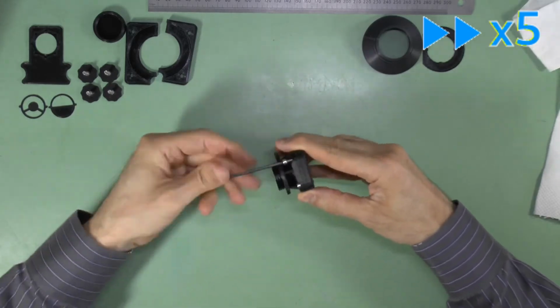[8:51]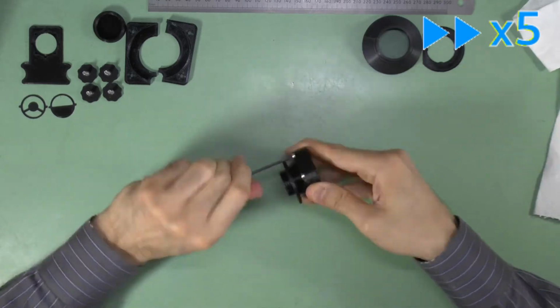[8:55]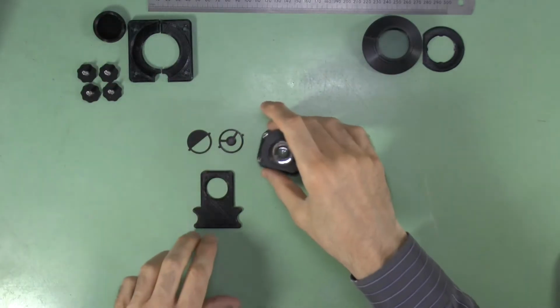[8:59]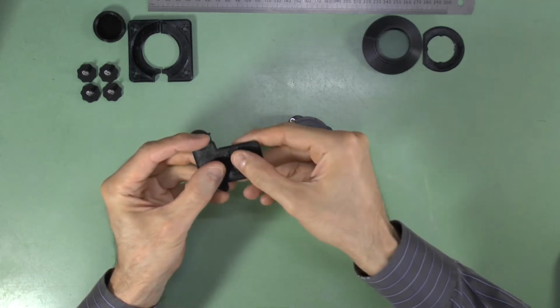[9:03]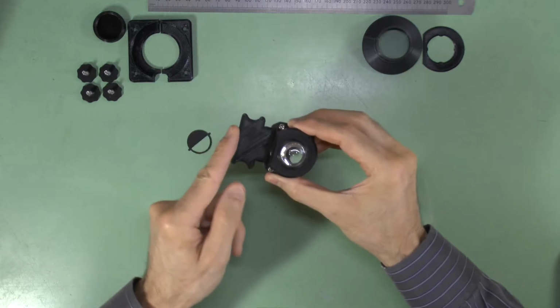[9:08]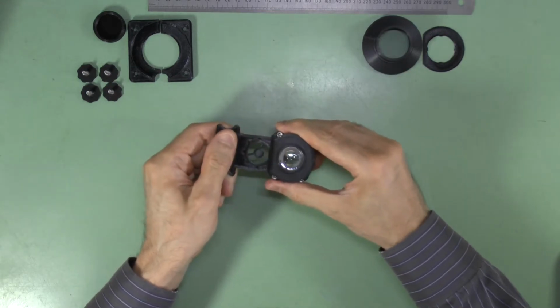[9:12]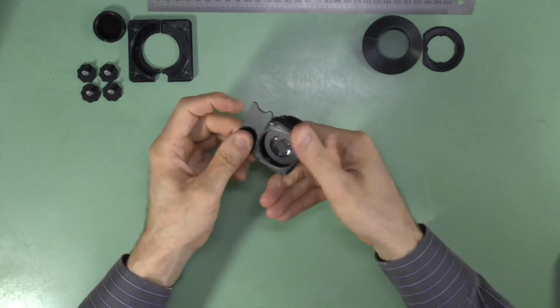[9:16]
Finally, print some condenser aperture filters and test the filter slot to ensure smooth action with the filter clicking in place as it should. Now that we have a fully assembled Abbe condenser, I'll show you how to fit it.
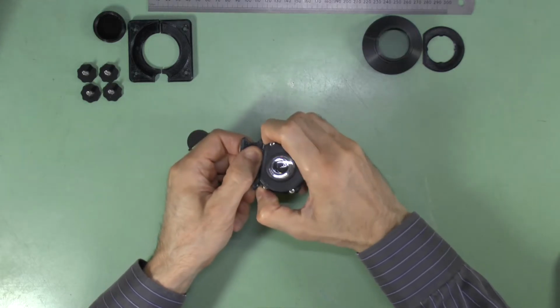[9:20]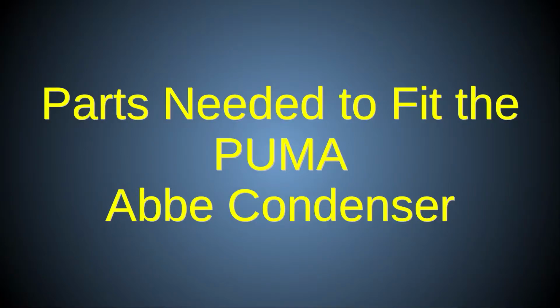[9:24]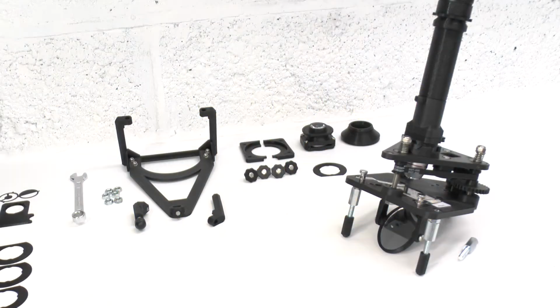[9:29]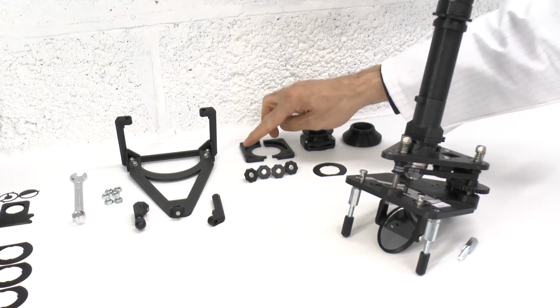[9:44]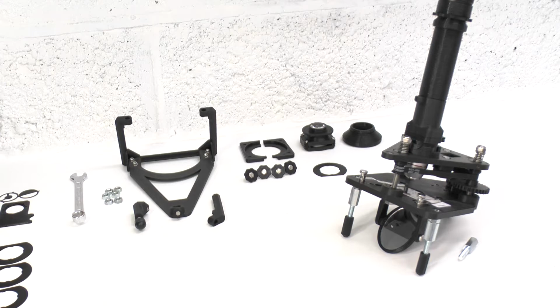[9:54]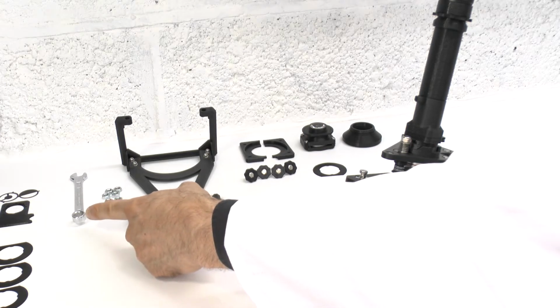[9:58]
To upgrade a PUMA foundation scope to use a condenser, we will need the PUMA foundation scope with its original mirror illuminator, the PUMA Abbe condenser module, and the condenser to mirror holder socket adapter, the substage condenser gripper brackets and four M4 thumb screws, and the long legs stand system, because once the condenser is added, the short legs system will no longer provide sufficient clearance. Also, a 10mm spanner may help to fix this securely.
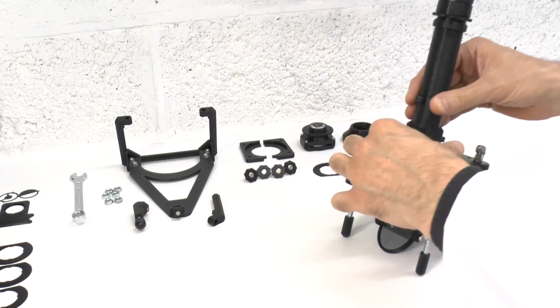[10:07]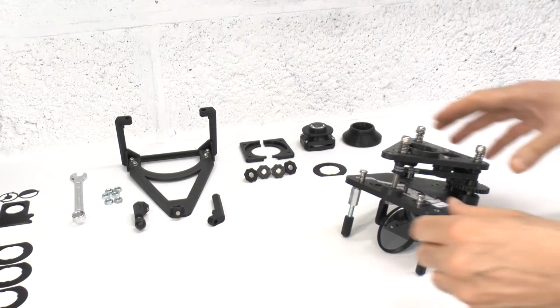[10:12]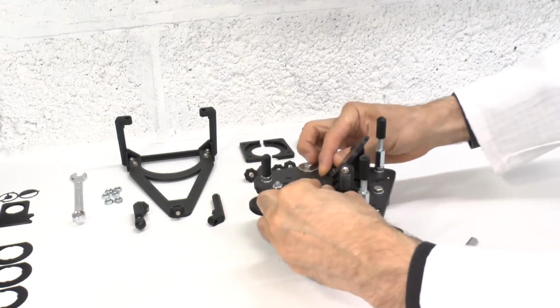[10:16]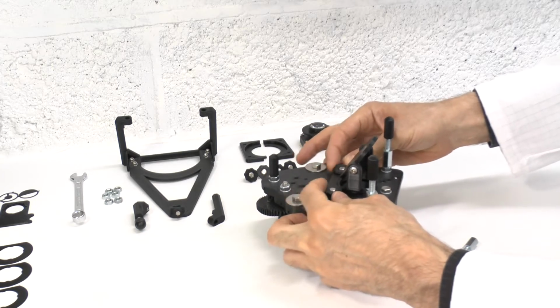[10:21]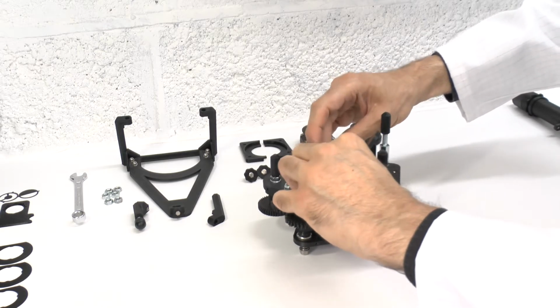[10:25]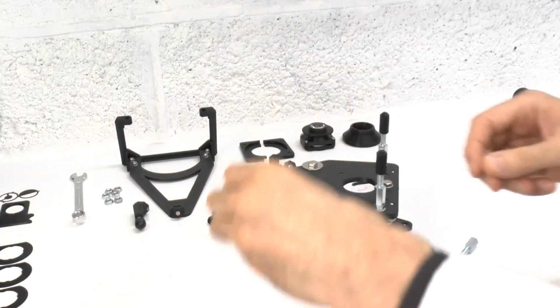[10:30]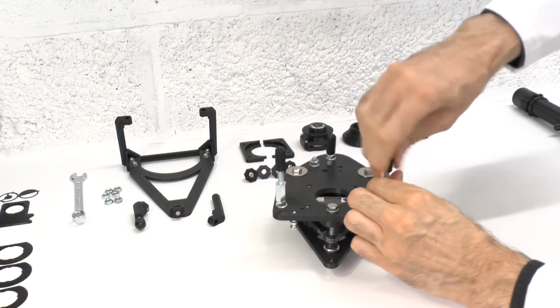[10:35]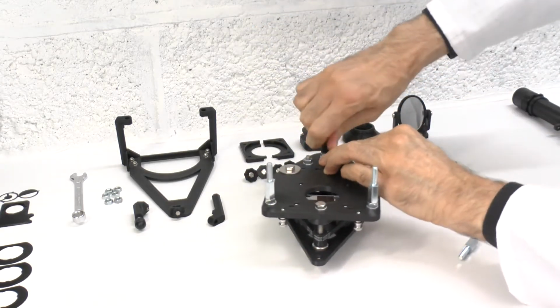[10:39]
First, remove the optical tube and lay it carefully to one side. Invert the scope and remove the thumb screws that hold the mirror to base plate attachment in place. Remove the attachment and remove the mirror suspension system from it. We won't be using the attachment, so put that to one side. Remove the short legs from the stage and ensure there is a spacer on all three legs of the scope. So if you didn't attach the back leg spacer, attach it now.
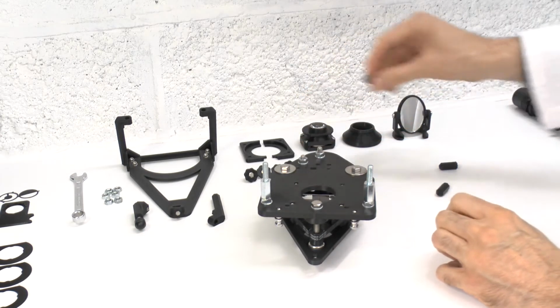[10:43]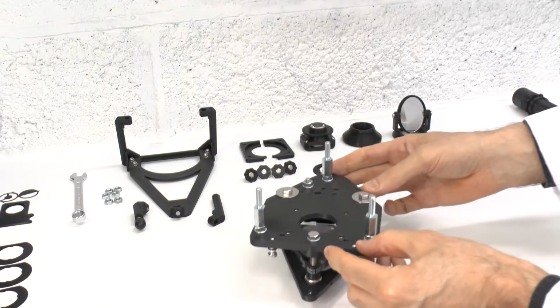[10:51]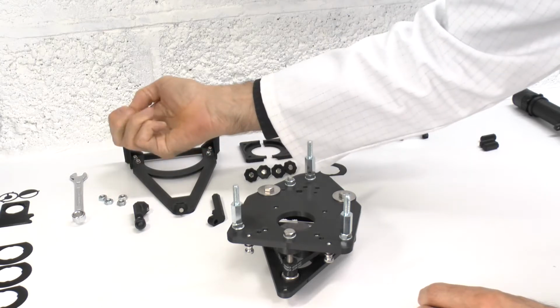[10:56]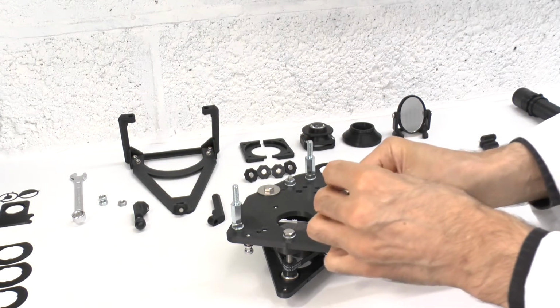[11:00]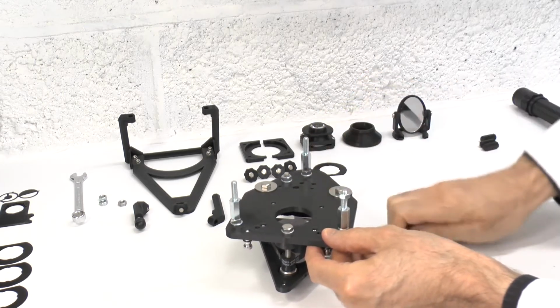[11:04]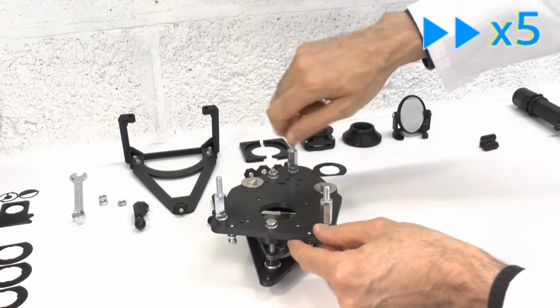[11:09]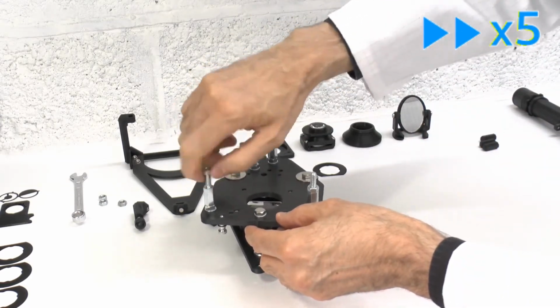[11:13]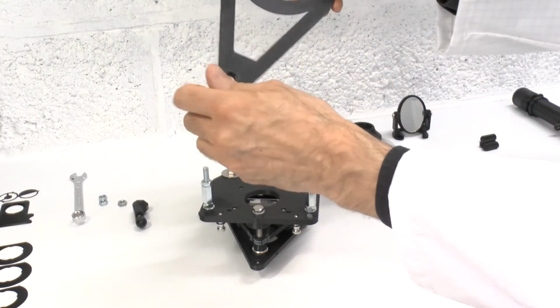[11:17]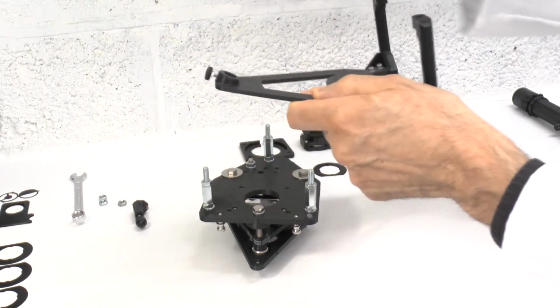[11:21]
Assemble and attach the long legs stand system as follows. First, add an M6 nut to each spacer. Next, loosen the rear leg locking thumb screw on the stand and insert the rear long leg through its hole in the stand. Do not tighten the thumb screw at this point.
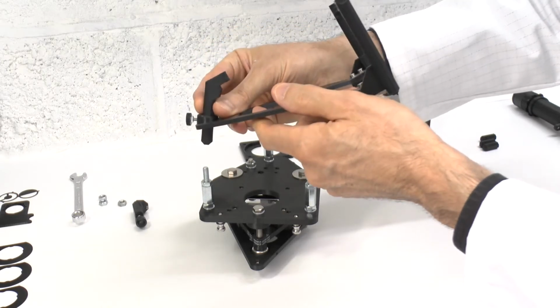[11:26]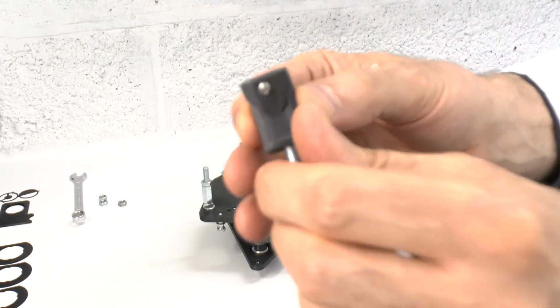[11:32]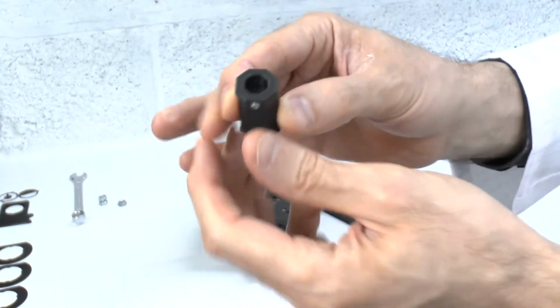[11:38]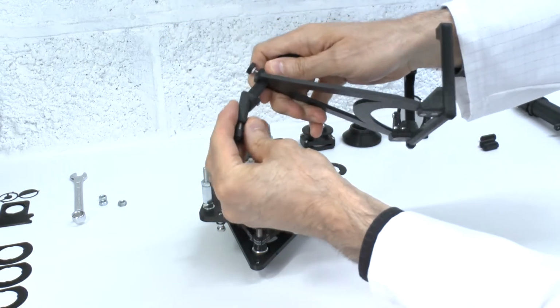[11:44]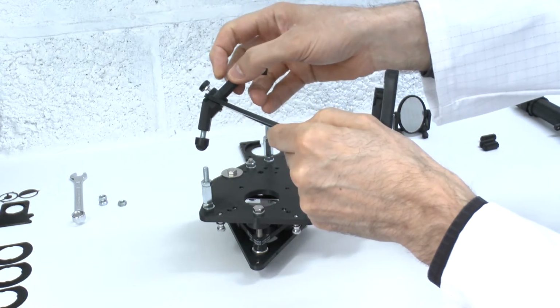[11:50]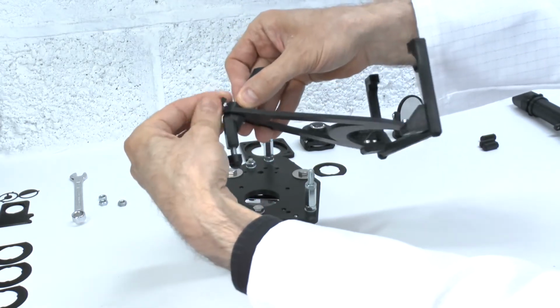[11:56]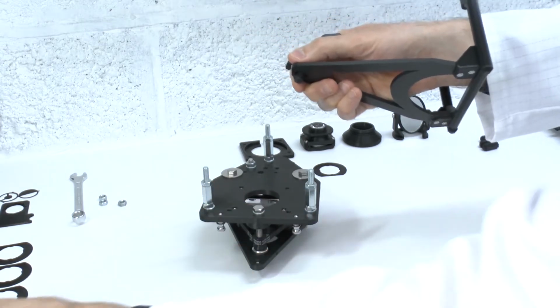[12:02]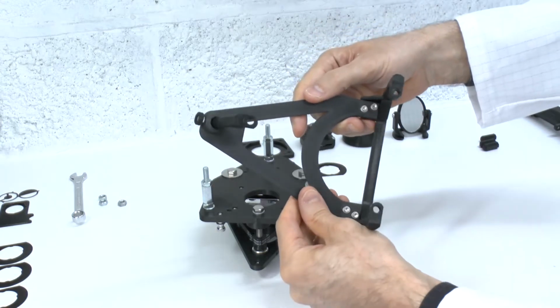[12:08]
Take the adjustable rear leg extender and ensure the fixing grub screw is either removed or screwed back so that it doesn't protrude into the cavity. Now push the rear leg extender up as far as it will go onto the rear long leg. Slide the base stand down the rear leg till the stand contacts the adjustable rear leg extender and then tighten the thumb screw. You may now remove the adjustable rear leg extender if you don't intend to use it. The rear leg extender is only used when you want the microscope stage to be level. For ergonomic viewing, it is not used, so the scope tilts back at an ergonomic angle.
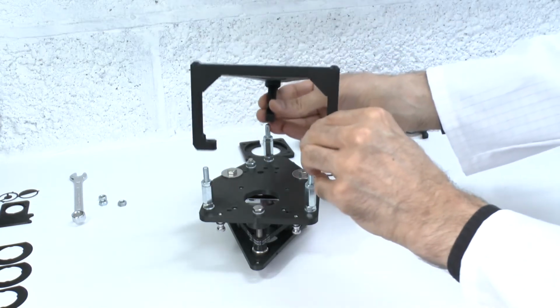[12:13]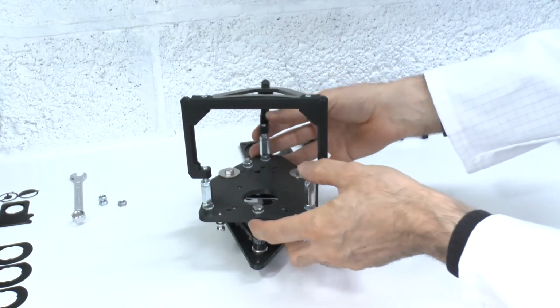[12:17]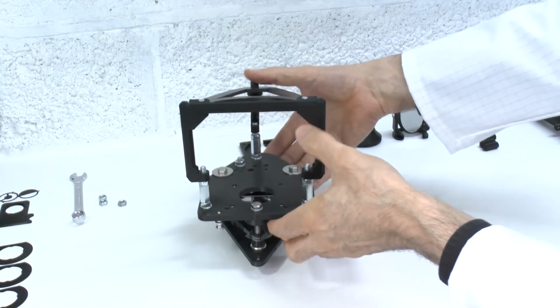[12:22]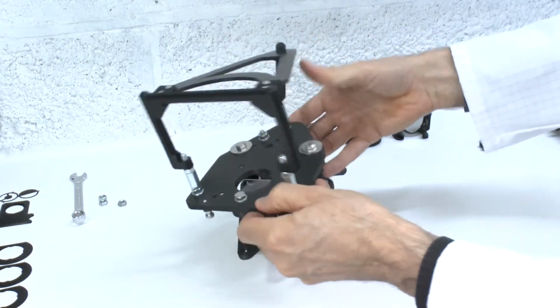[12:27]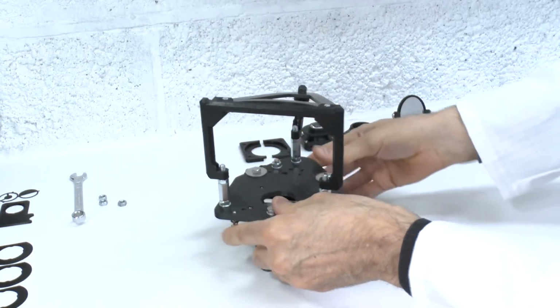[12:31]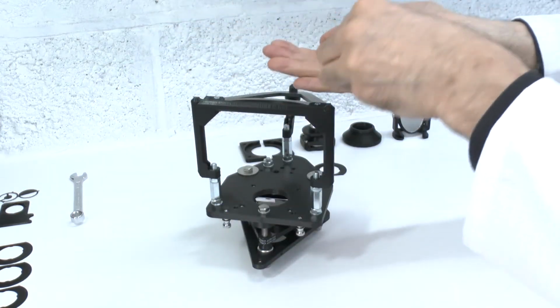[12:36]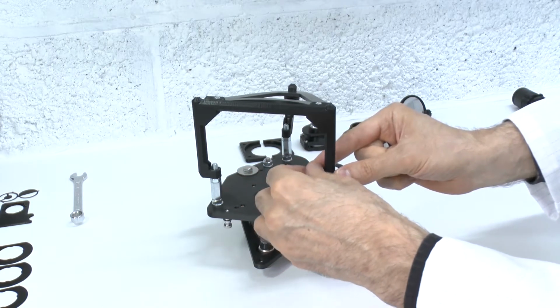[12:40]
With the long leg system assembled, slide the holes over the bolts of the spacers. This may be a bit fiddly or a tight fit, so bear with it and try to move them all a little bit at a time to ensure everything is level as you go down. Once in place, fix everything with three more M6 nuts and tighten them a little to ensure they don't come loose. A 10mm spanner may be used here, but take care not to over-tighten.
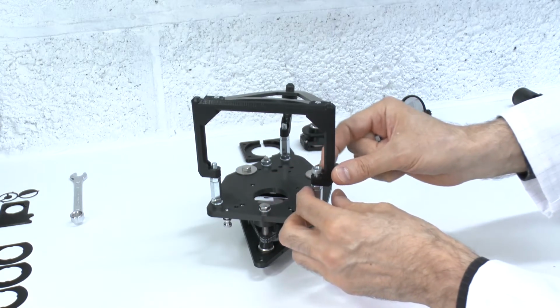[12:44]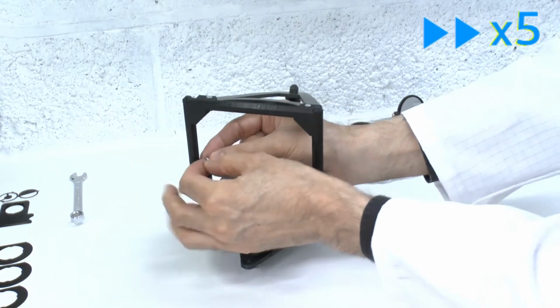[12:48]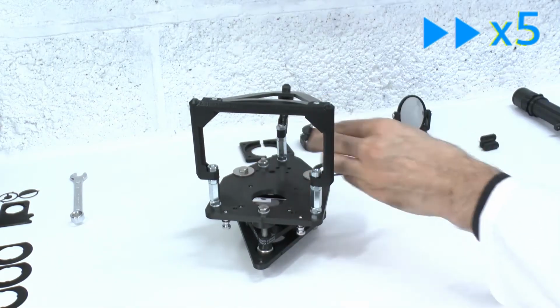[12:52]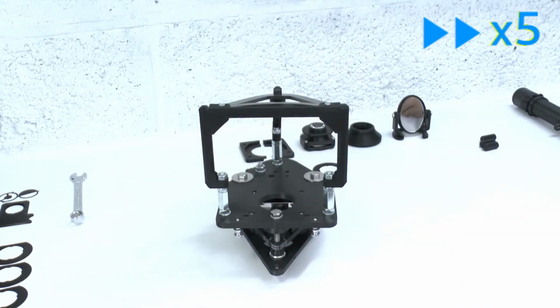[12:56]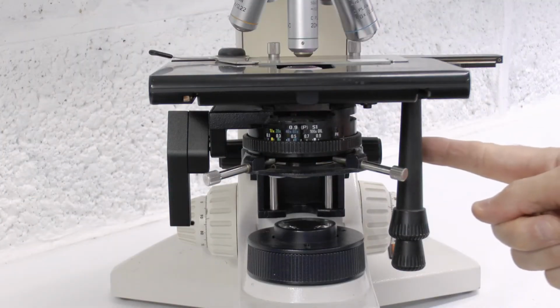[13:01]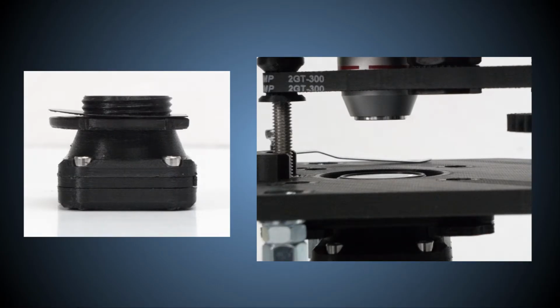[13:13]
We can now fit the Abbe condenser. The condenser, in a professional microscope, will have its own rack and pinion focus adjustment to raise and lower the condenser relative to the top surface of the stage. The PUMA Abbe condenser can also be focused, but with PUMA we use one or more fixed thin spacer washers to achieve this height adjustment.
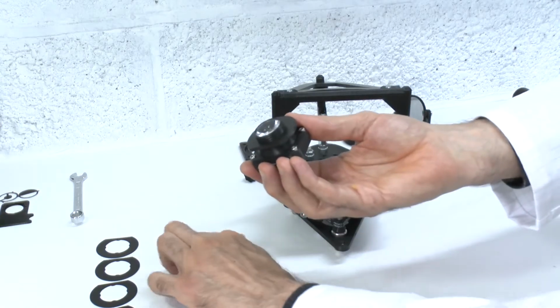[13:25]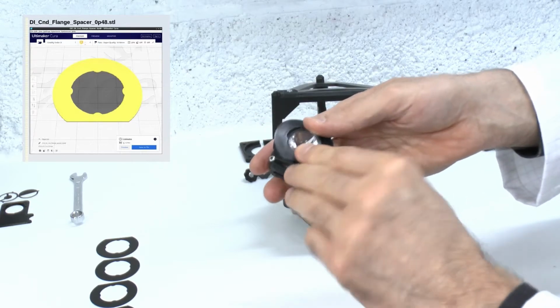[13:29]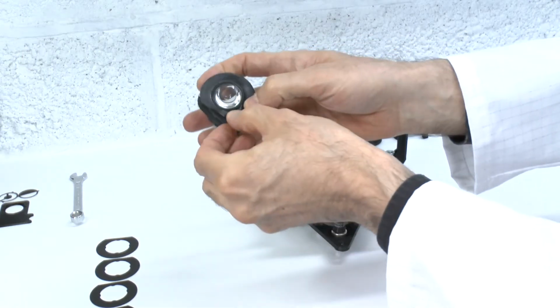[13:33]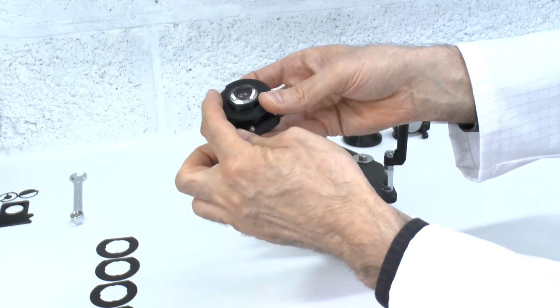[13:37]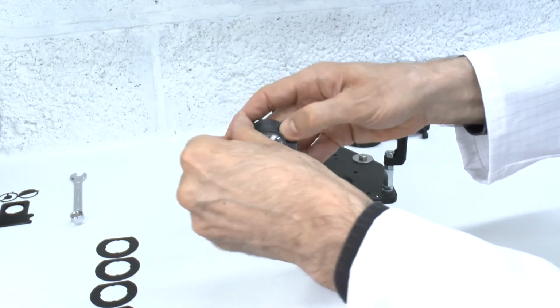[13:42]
Place a single condenser flange spacer over the condenser flange. Take care to ensure it goes all the way down and that the flat edge of the spacer lines up with the flat edge of the condenser flange.
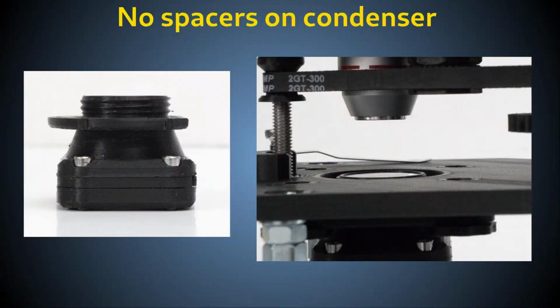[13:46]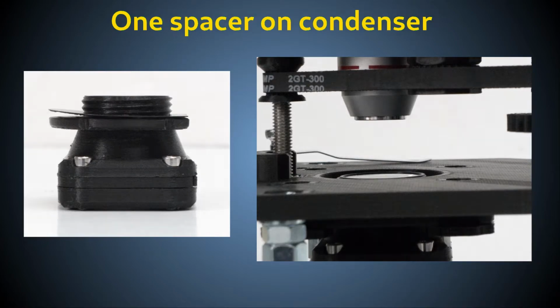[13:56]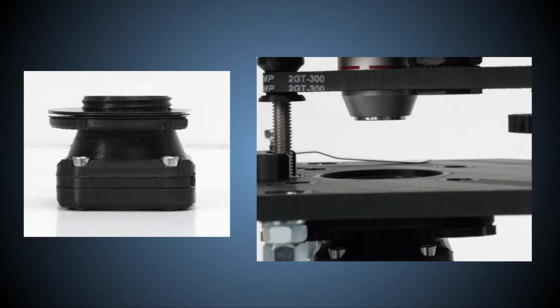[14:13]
Without any spacers, the condenser top lens will protrude a little above the top surface of the stage, and you won't be able to hold the condenser very tightly against the stage with the condenser gripper brackets. With one spacer in place, the top of the condenser will be about level with the top surface of the stage, and this is about right for most observations. If you want to lower the condenser further below the stage, you can do that by simply adding more spacers.
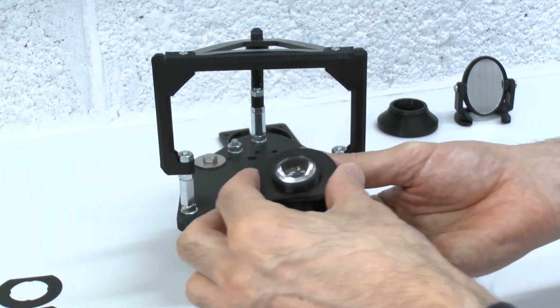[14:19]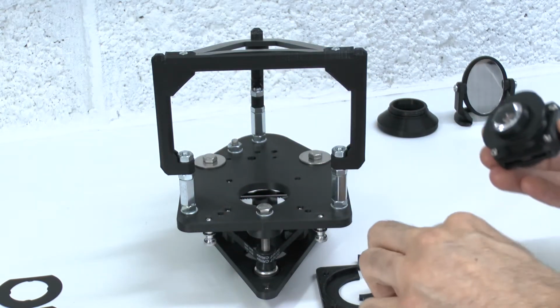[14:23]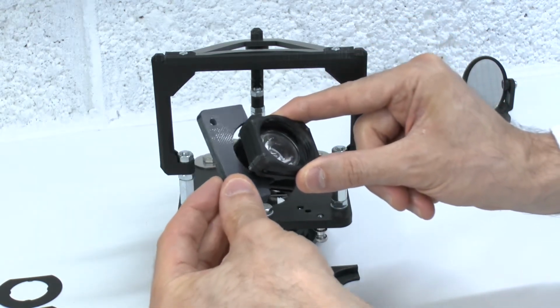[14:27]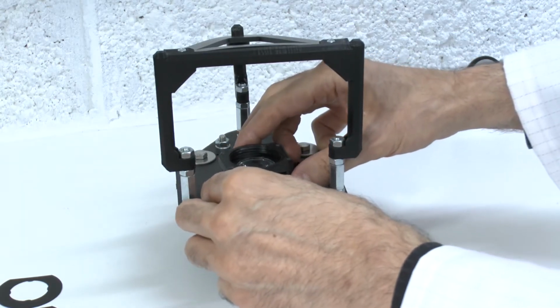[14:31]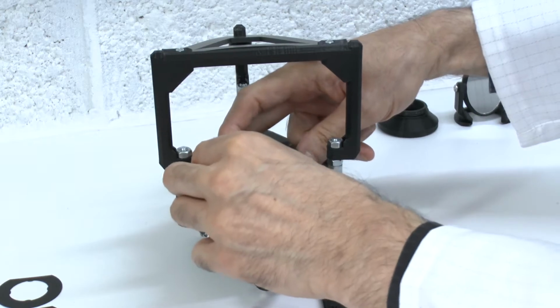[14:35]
Now clasp the condenser to the base plate with the condenser gripper brackets. First, put one of the brackets over the condenser flange and fix it to the stage with two of the M4 thumb screws, but do not tighten them all the way. Be careful to position the condenser with the flattened edge of the flange facing the front of the stage.
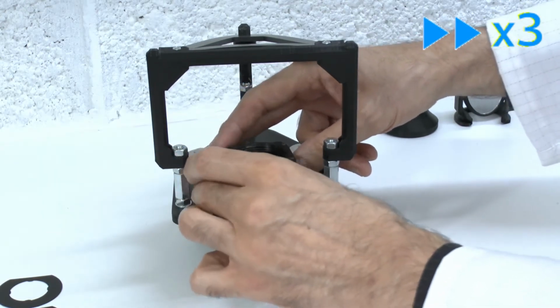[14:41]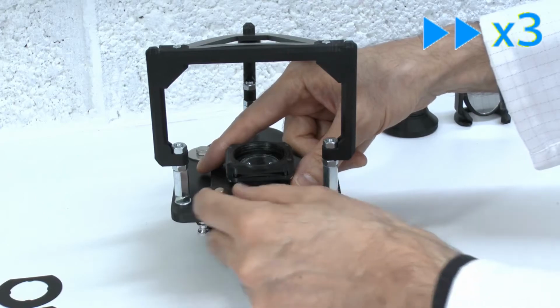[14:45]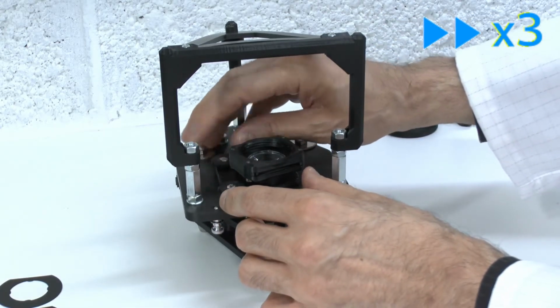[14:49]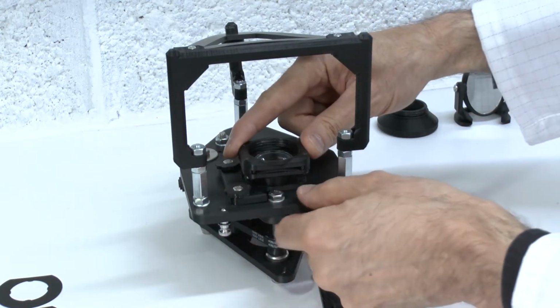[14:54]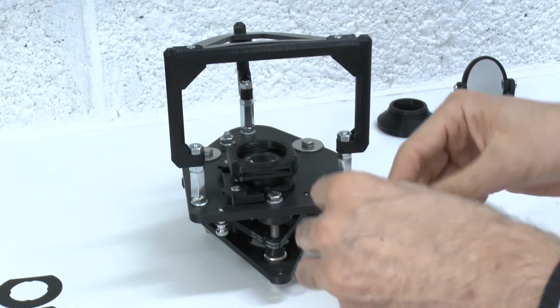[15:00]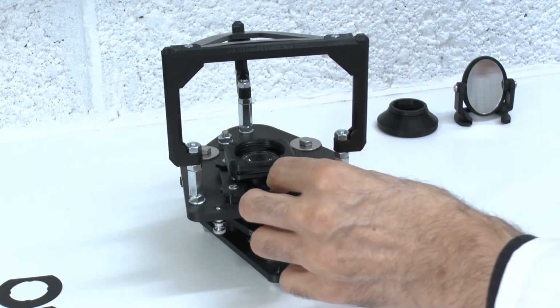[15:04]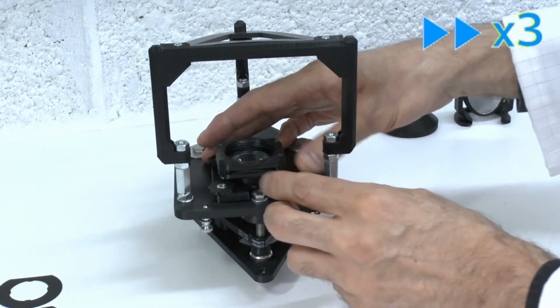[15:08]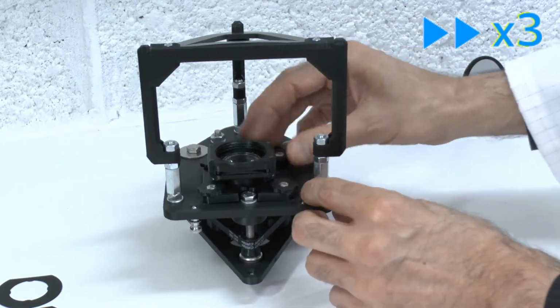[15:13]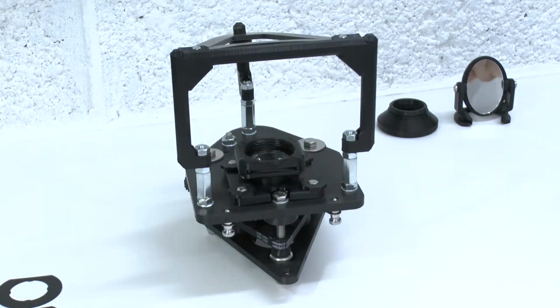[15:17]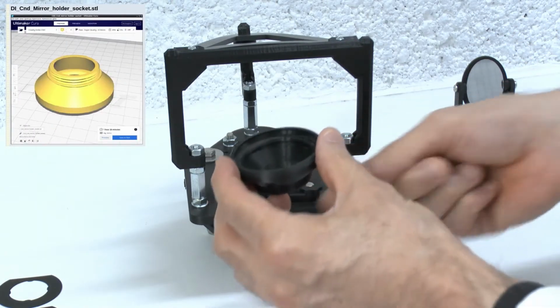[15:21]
Slide the condenser as far as it will go towards the bracket that is already in place and insert the second bracket and M4 thumb screws. Thread the condenser-to-mirror-holder socket adapter to the bottom of the condenser and make it finger-tight.
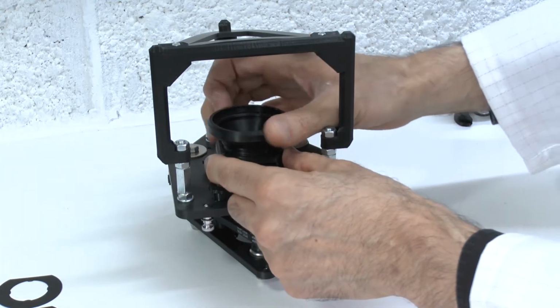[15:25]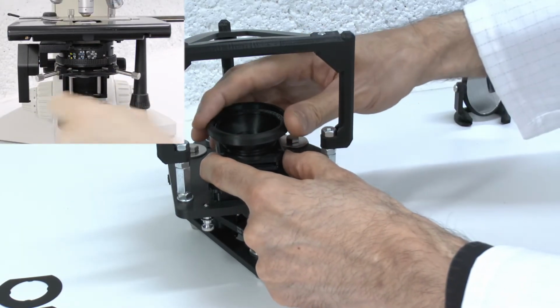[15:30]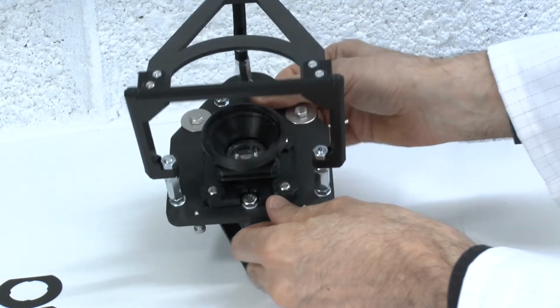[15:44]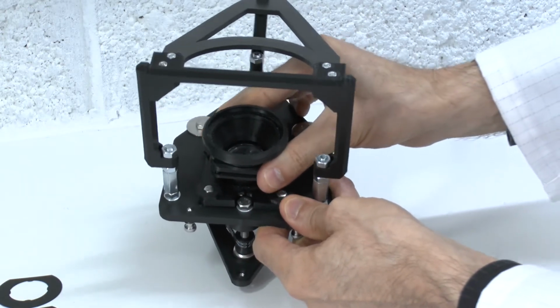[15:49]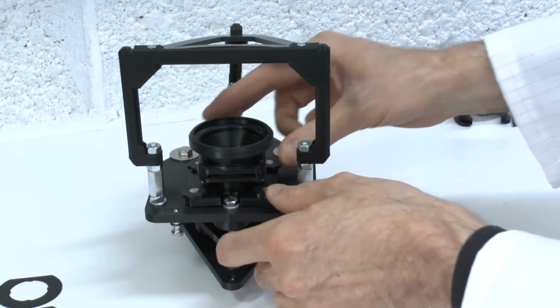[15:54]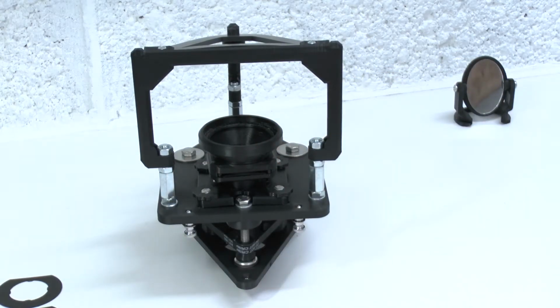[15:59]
Professional microscopes have condenser centration controls, usually in the form of two horizontal sprung thumb screws at the sides with a fixed sprung pin at the back. The PUMA Abbe condenser also has a centration adjustment, but this is achieved by manual sliding of the condenser around in its well, then tightening the thumb screws to fix it in place. You can always loosen the thumb screws a bit to readjust the centration as needed and tighten them again as
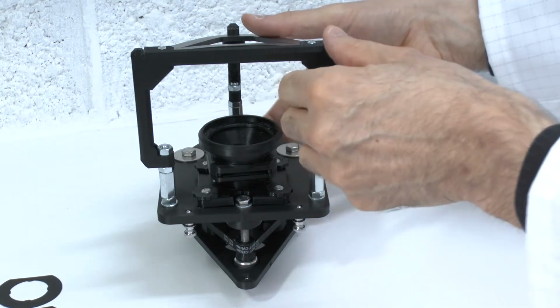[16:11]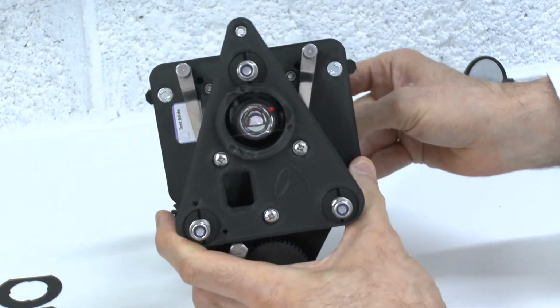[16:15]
required. The most accurate centration of the condenser can only really be achieved with the Köhler illuminator in place, so in this case just center it visually as best you can by looking at the condenser from on top and try to get it centered in the hole in the stage.
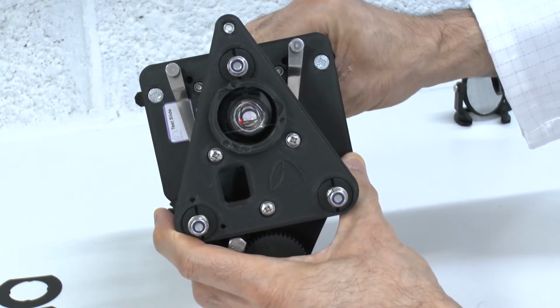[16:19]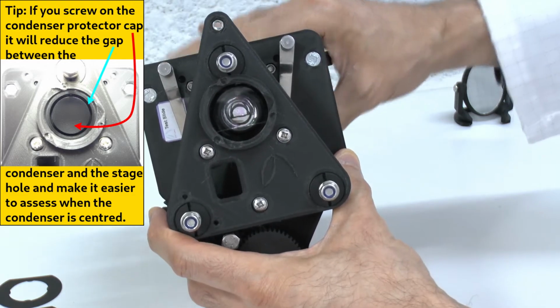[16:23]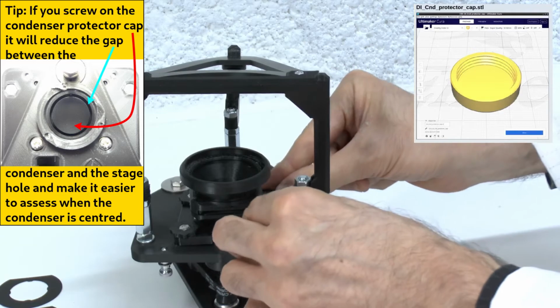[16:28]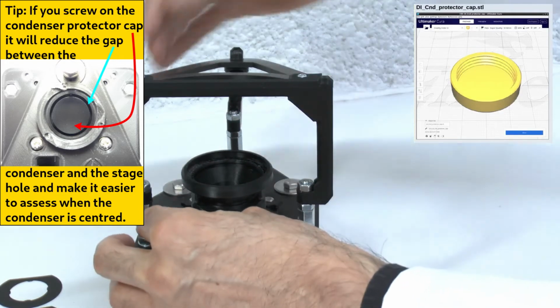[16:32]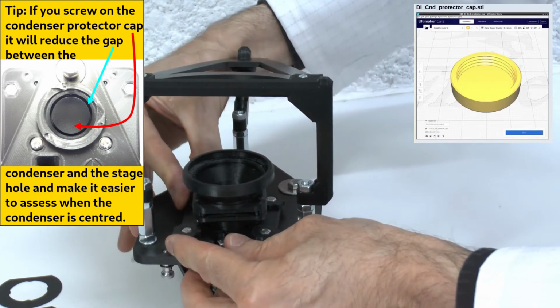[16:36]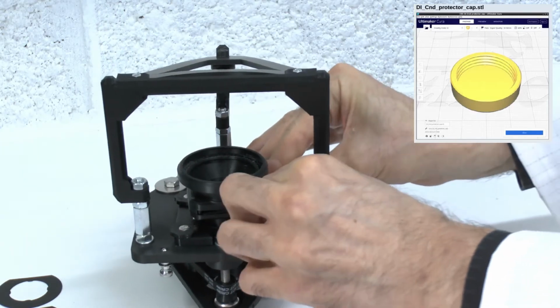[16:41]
Note that the reason the condenser flange is flattened at the front is so you can move the condenser forwards for a good distance without the flange catching on the front focus post bolt head. If you did not orientate the condenser or a flange spacer in this way, then you will never be able to get the condenser properly centered. It will always be offset a little backwards.
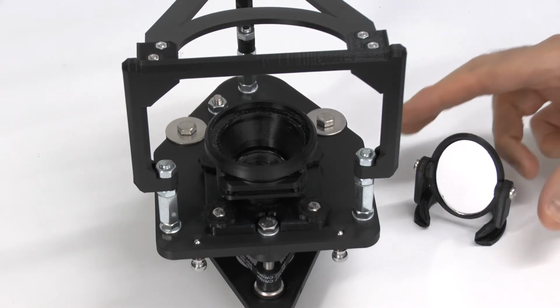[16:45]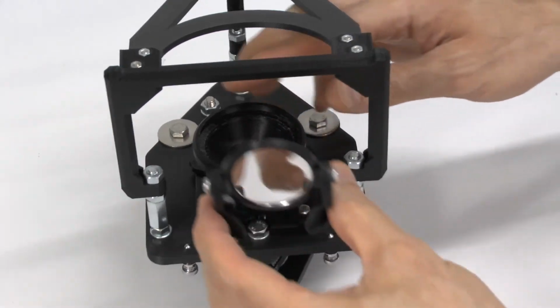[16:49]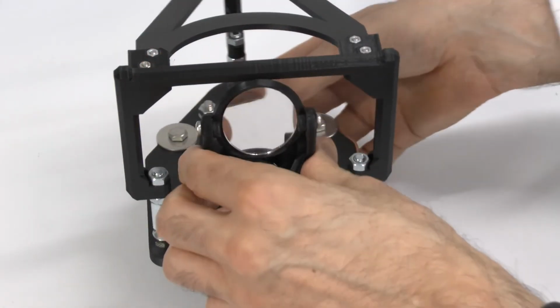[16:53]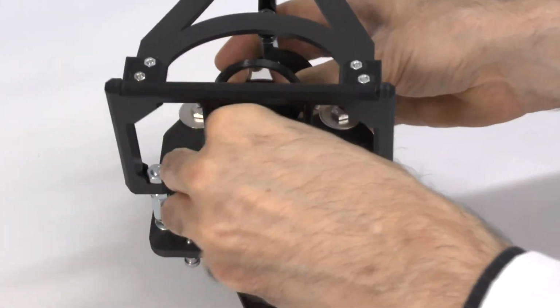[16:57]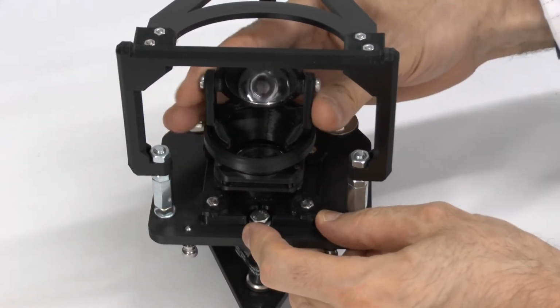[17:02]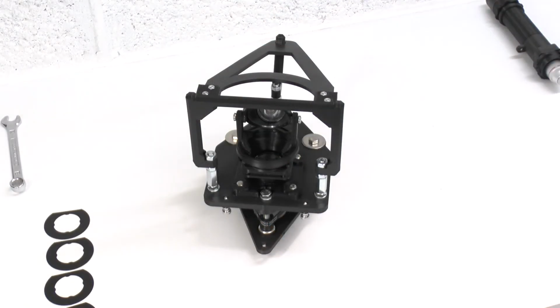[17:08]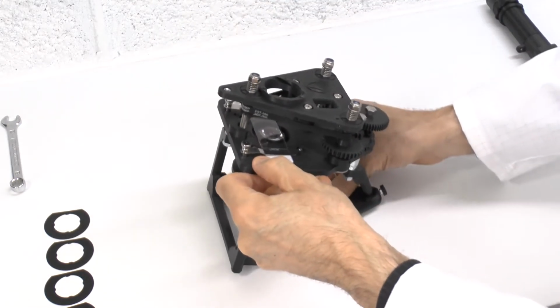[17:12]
You can now fit the mirror suspense system into the mirror holder socket by squeezing the free ends together and sliding it in at an angle. Now you can put the microscope the right way up, reattach the optical tube, and the upgrade is complete.
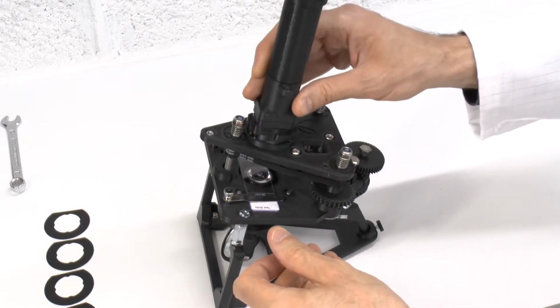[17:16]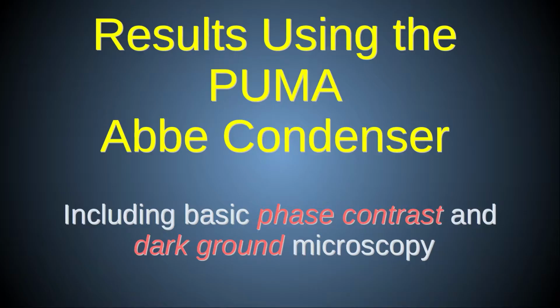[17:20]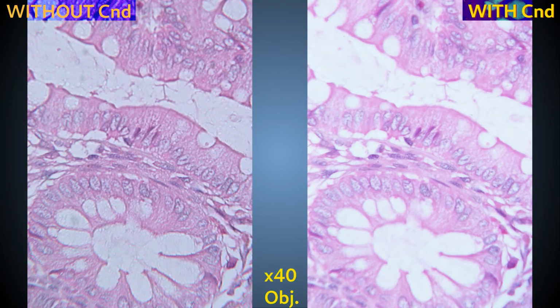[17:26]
Here are some before and after images taken without a condenser on the left and with the PUMA Abbe condenser on the right, both using mirror illumination. The specimen is an H&E stained section of human colon. The main benefits of a condenser for ordinary transillumination microscopy are seen with high-power objectives such as the ×40.
Note, in the condenser-less microscope, that the image is dark with coarse hyper-contrasted features and exaggerated diffraction fringes that obscure detail. By comparison, the microscope with the condenser in place shows a brighter image with more natural contrast and improved resolution.
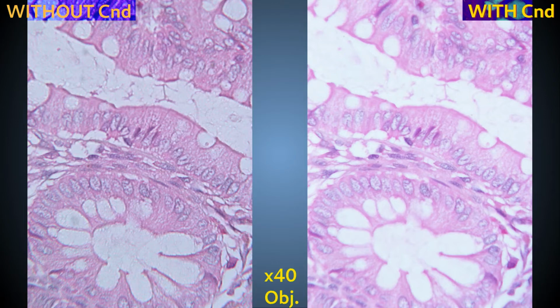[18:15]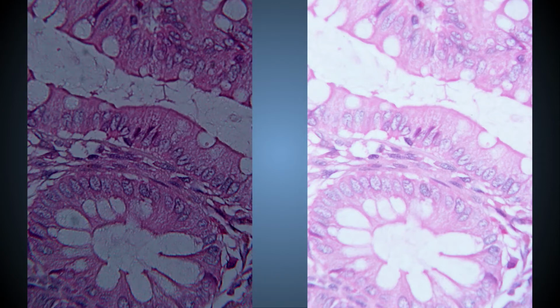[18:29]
Also, note that the reduced brightness that comes without a condenser is not fully appreciated here because the camera that took these photos compensated for absolute brightness with automatic gain. This image shows you a more faithful representation of what you would see if you were to look down the microscope by eye.
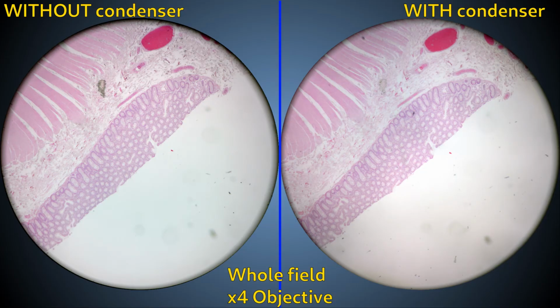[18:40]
With low magnification objectives, such as ×4, there does not at first seem to be much advantage of having a condenser. In fact, there is even a disadvantage in that the condenser image has uneven illumination, being darker at the periphery compared to the condenser-less microscope. There are some things you can do to fix this, but I'll discuss those in another tutorial.
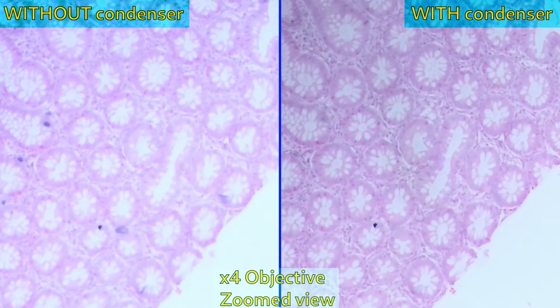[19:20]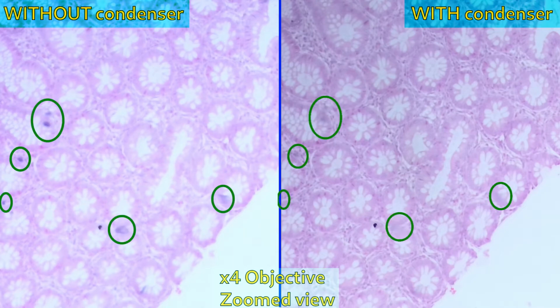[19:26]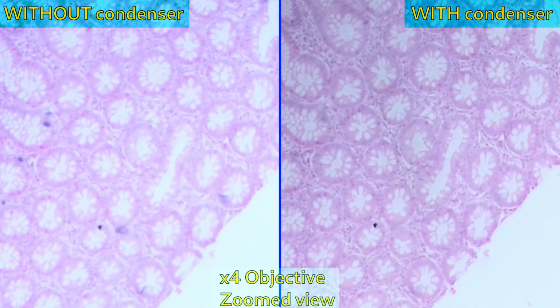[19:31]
For now, however, note that without a condenser, any small speck of dust or debris overlying the sample appears exaggerated, as shown here. Also, if we zoom into this part of the image, we can see that not only are overlying debris less visible with the condenser, but also the condenser provides crisper detail, distinguishing individual cells in the lamina propria, for example, even with this low magnification ×4 objective lens, because the condenser makes fuller use of the lens's numerical aperture.
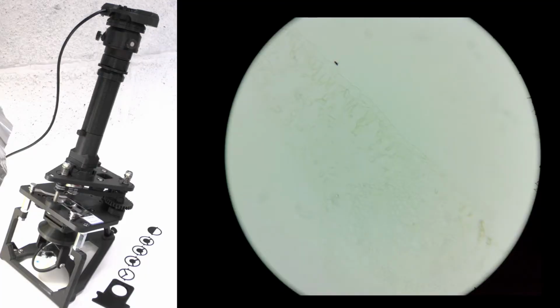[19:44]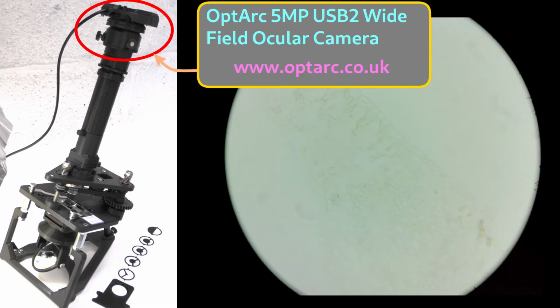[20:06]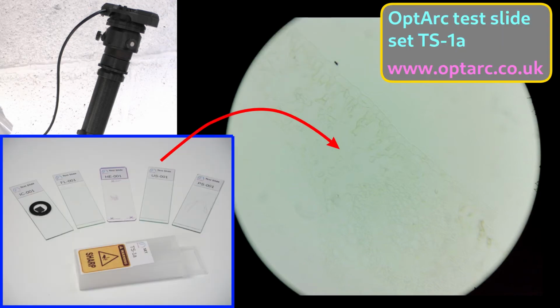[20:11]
Now I'll show you the basics of using the aperture filter slot for performing dark ground microscopy and Schlieren phase contrast. The split-screen video you're about to see shows the view down the ocular of the microscope and, simultaneously, an external view of the microscope. The microscope camera is the OptArc 5-megapixel USB 2 wide-field ocular camera, and the specimen is a thin section of unstained plant tissue from an OptArc pre-prepared
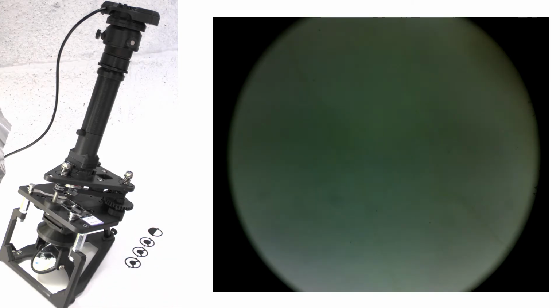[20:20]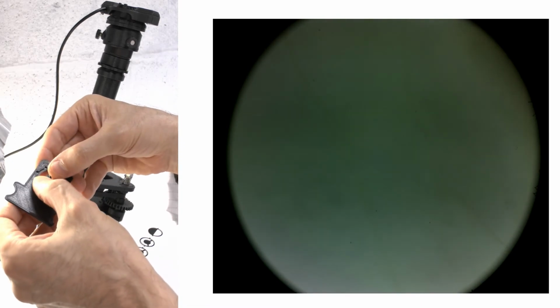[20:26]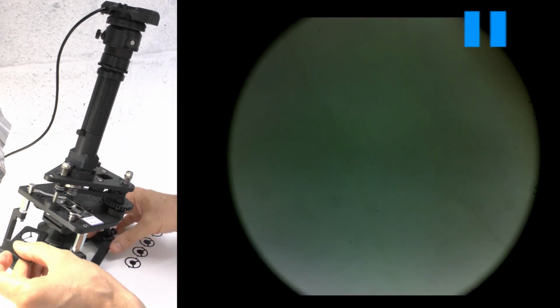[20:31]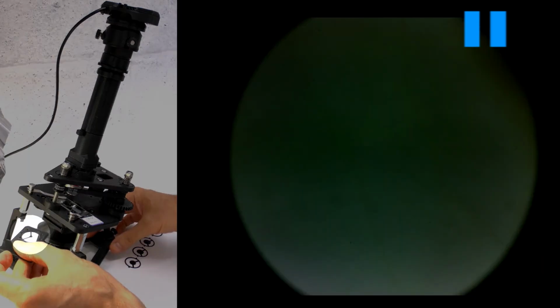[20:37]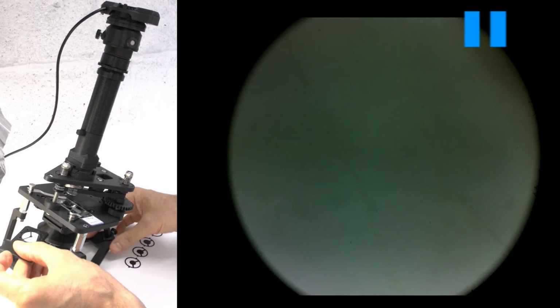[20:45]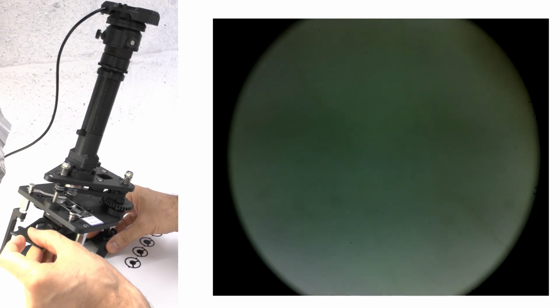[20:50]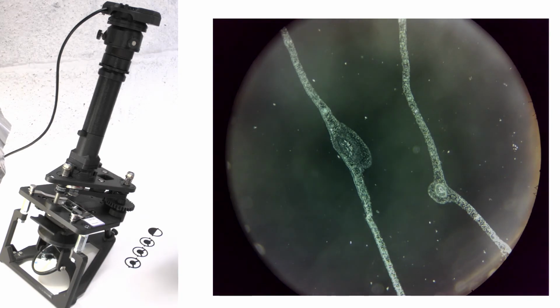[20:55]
test slide set. First, I will demonstrate dark ground microscopy, also called dark field microscopy, using a ×4 objective. For dark ground, we use a central obscuring disc as the filter. The size of the disc must be matched to the numerical aperture of the objective, so it is quite small here because the ×4 lens has a low numerical aperture. Note that you can hardly see the tissue with normal illumination. But as soon as the dark ground filter is inserted into the condenser, the tissue section dramatically stands out.
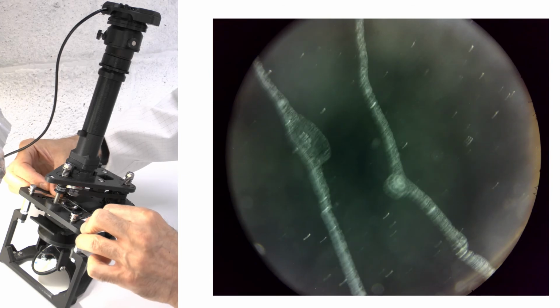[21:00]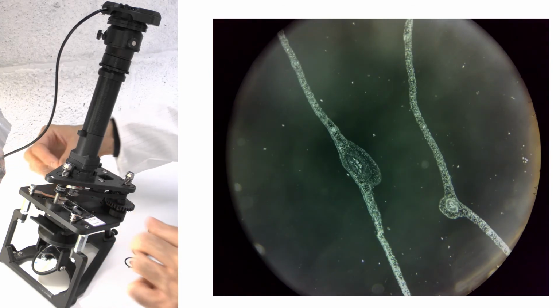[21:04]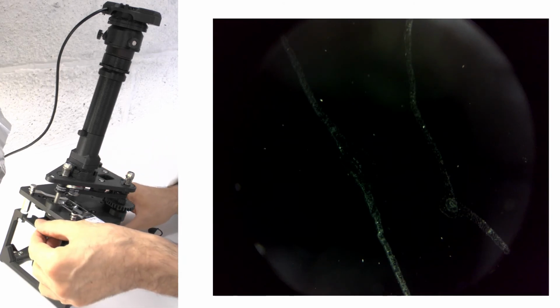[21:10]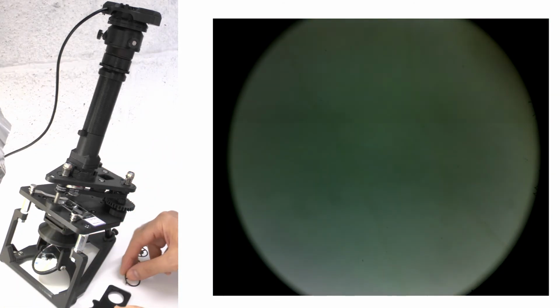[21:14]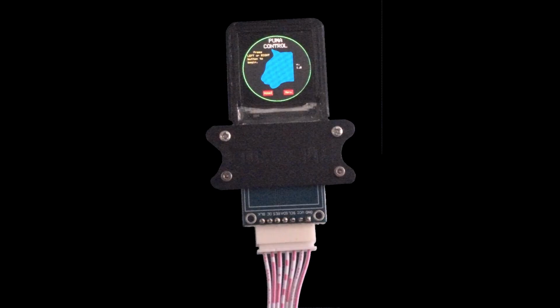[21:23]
Note also the technique I use for pushing out the filter from the condenser. This helps prevent inadvertently decentering the condenser and also makes it less likely to bend the filter as you remove it, something that will be very important when using the delicate electronic spatial light modulator TFT filter. But that will be the subject of another video.
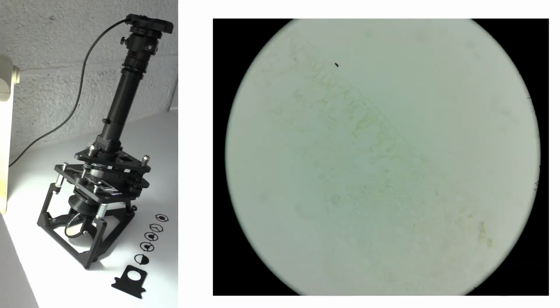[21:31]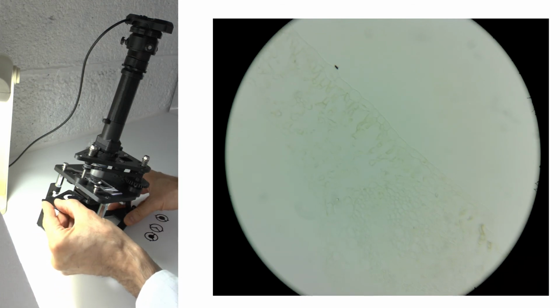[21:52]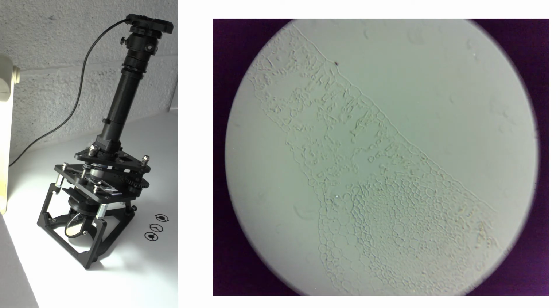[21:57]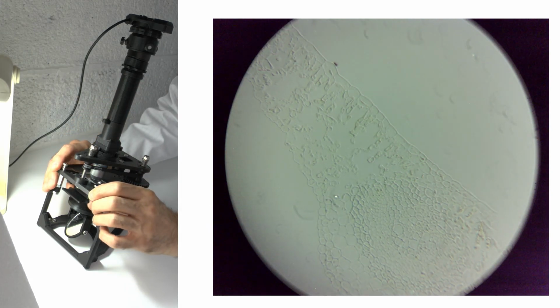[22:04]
Now, I will demonstrate Schlieren phase contrast using a ×40 objective. For Schlieren, you typically will use a half-filled aperture, but adding a central partially blocking spot helps improve contrast further for direct vision. This results, as you see here, in a kind of C-shaped aperture. Again, note the dramatic increase in contrast of this unstained cellular plant tissue when the filter is inserted. Once more, note the technique used to remove the filter.
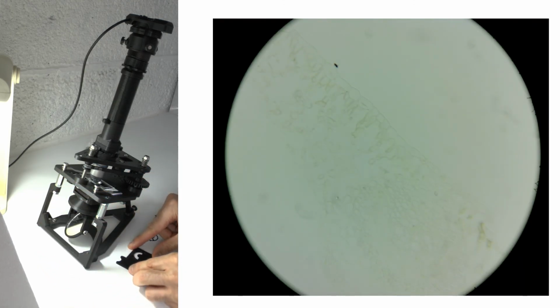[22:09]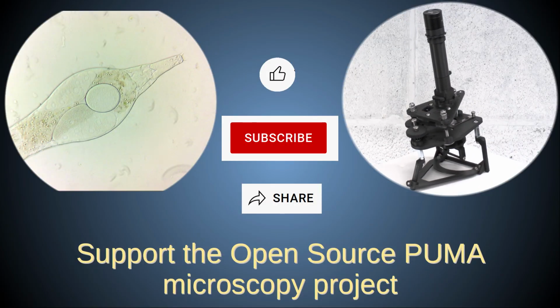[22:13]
Now, this was just a quick basic overview. I'll deal in more detail with these specialist modes of illumination in another tutorial.
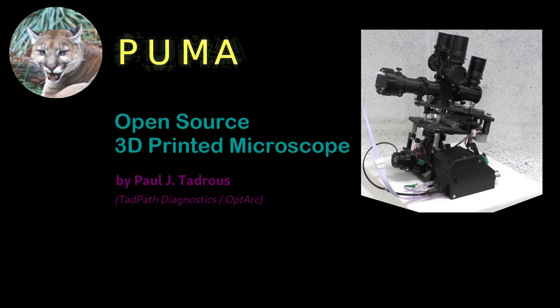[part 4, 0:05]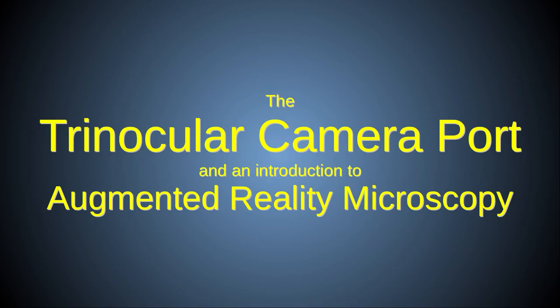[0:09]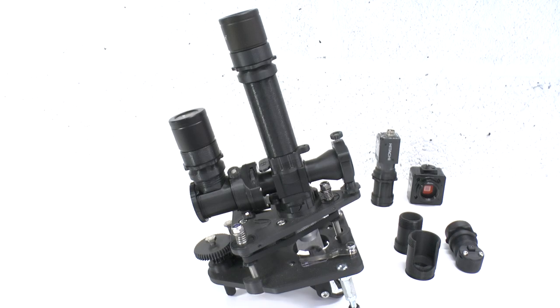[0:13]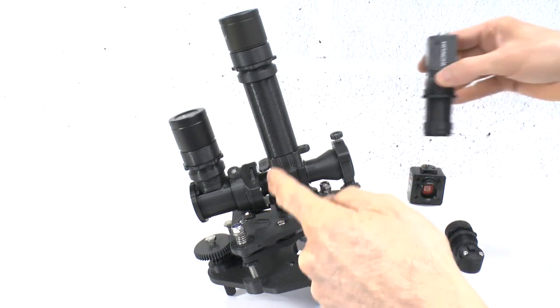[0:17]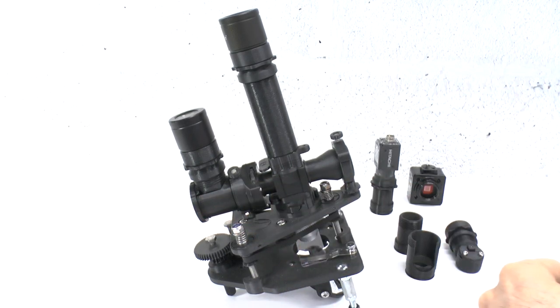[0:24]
In this video, I'll discuss the PUMA Trinocular Camera Port module, which allows an ocular lens or a camera to be added to the side of the advanced filter block, using the epi-illumination port as an imaging output path instead of an illumination input. The Trinocular Camera Port reuses a number of modules that have previously been described.
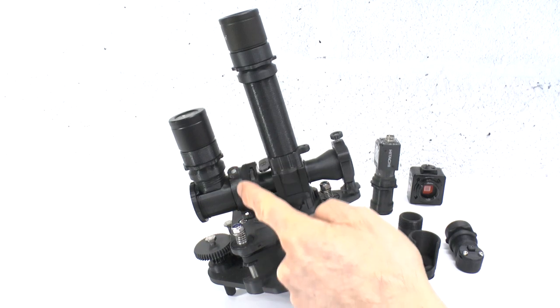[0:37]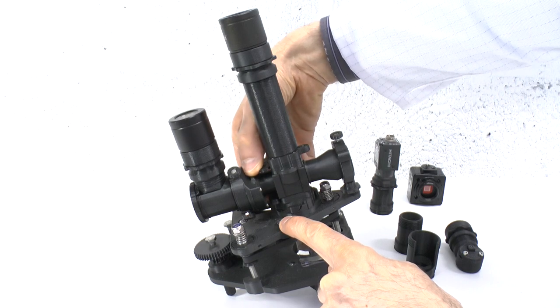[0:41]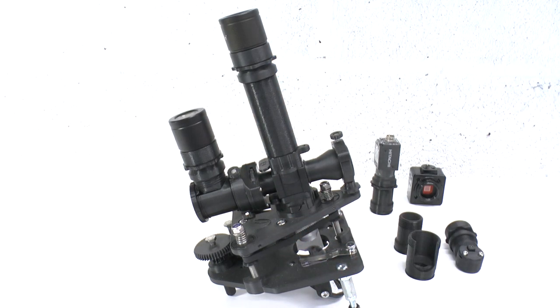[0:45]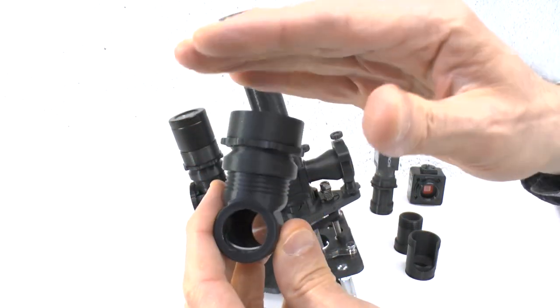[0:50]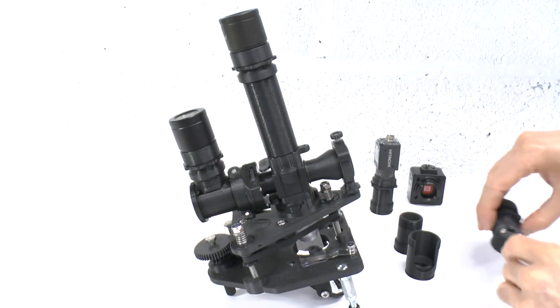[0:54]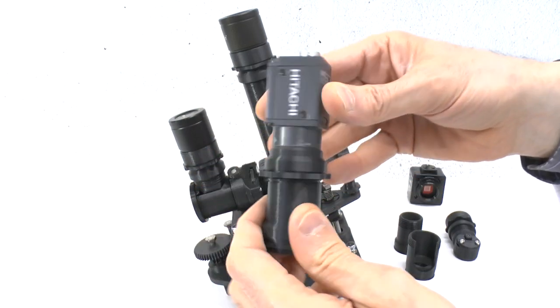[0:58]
For example, it fits into the filter block with the same polarizing connector used for the epi-illuminator described in the video on epi-illumination. It also uses the same mirror block ocular assembly used in the lower outlet of the binocular head or the ergo-monocular head, and the standard C-mount extension and lock nut system, and all these modules were described in the video on the ocular heads.
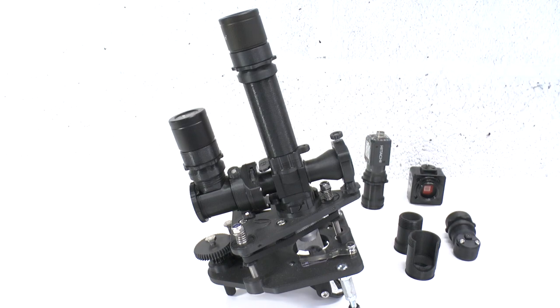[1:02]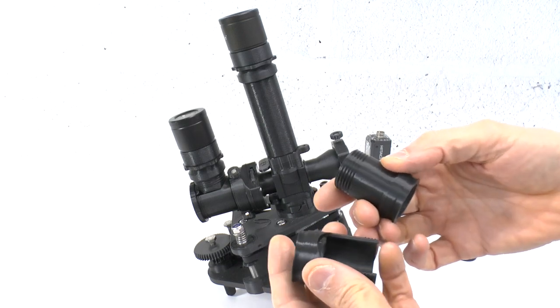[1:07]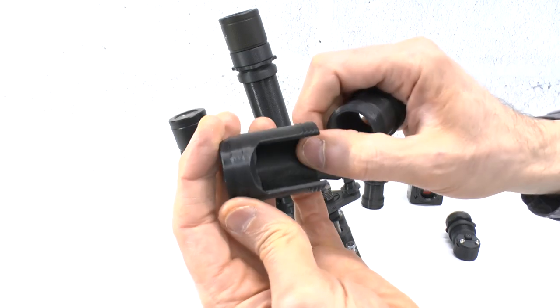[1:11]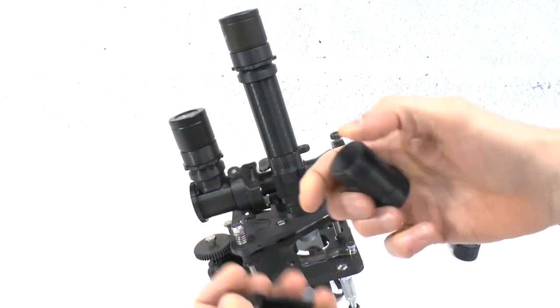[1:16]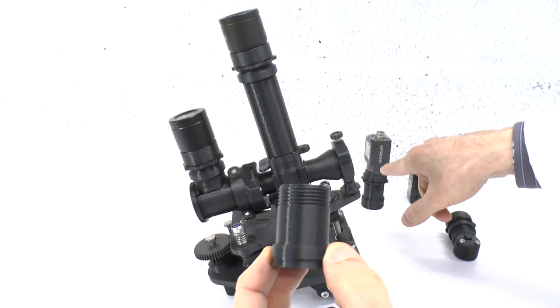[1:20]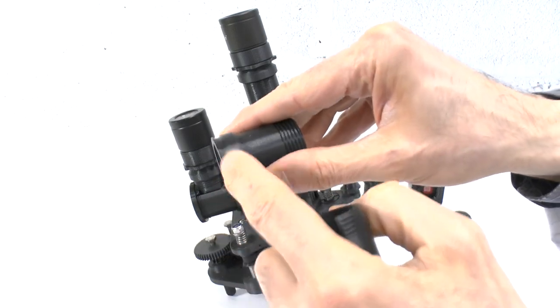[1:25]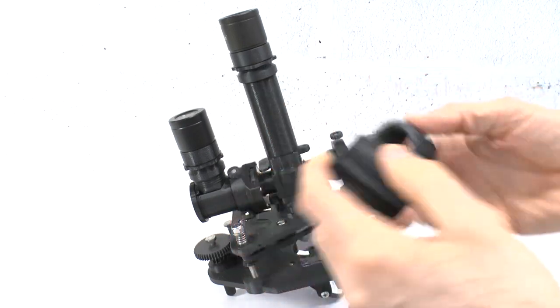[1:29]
In fact, the only modules that are unique to the Trinocular Camera Port are the parts that articulate to the polarizing connector, namely a modified mirror block tube or MBT for the ocular assembly, and a modified ocular thread to accept the C-mount extension. These modules are modified in that they have an adjust collar built into one end, and they are of the appropriate length to ensure parfocality with the ocular head modules.
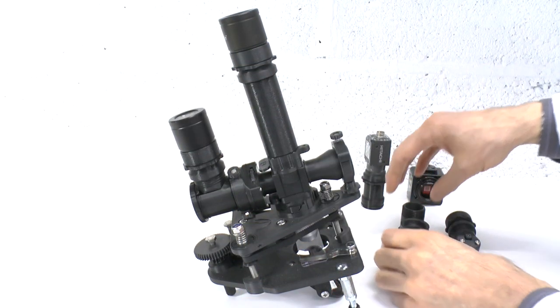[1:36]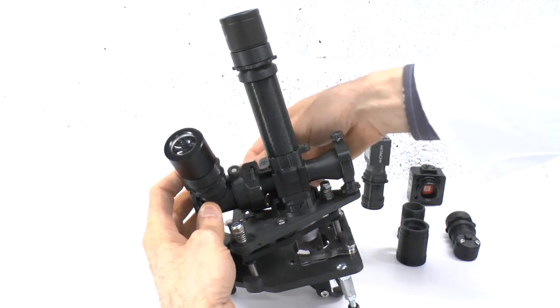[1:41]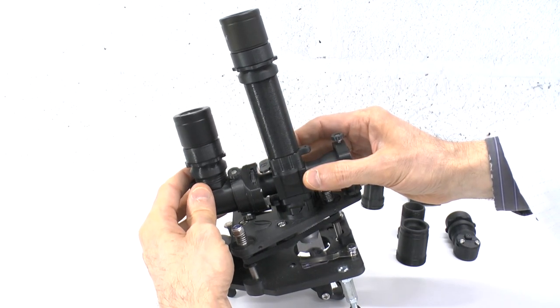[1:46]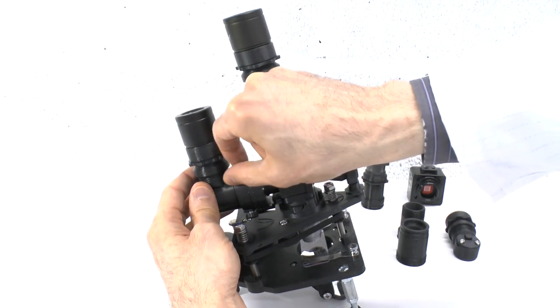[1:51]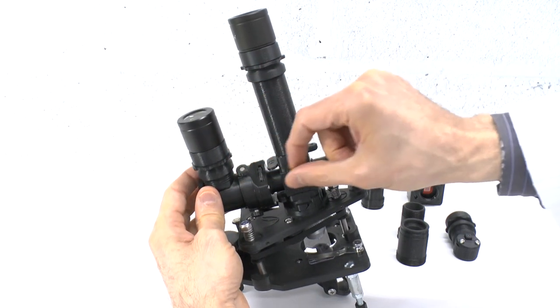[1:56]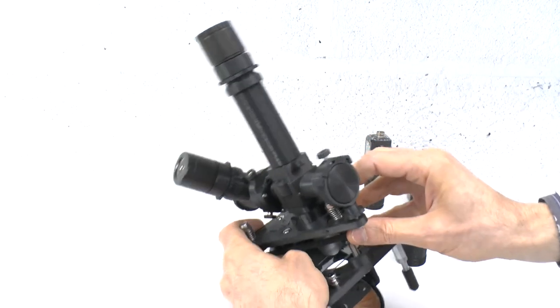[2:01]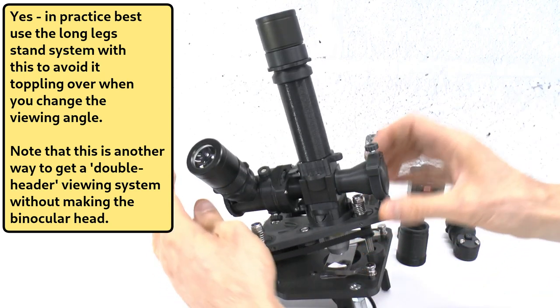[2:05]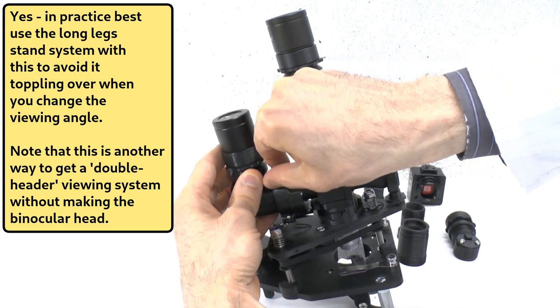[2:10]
One advantage of using the adjust ring and collar connector is that you have a large degree of rotational and centration adjustment to help align the image you see or capture in this trinocular port with any image simultaneously being viewed or recorded with the ocular head. The rotational freedom also allows you to position an ocular lens at a convenient ergonomic viewing angle, or to position a camera so as to prevent it from getting in the way of any ocular head modules. The polarizing connector is used for reasons that will soon be explained.
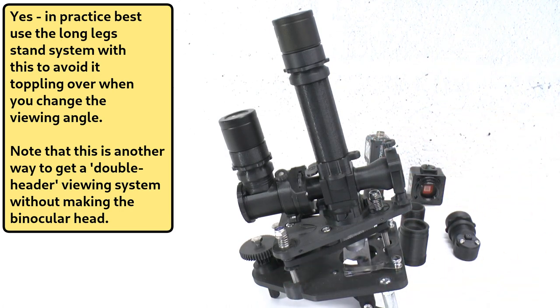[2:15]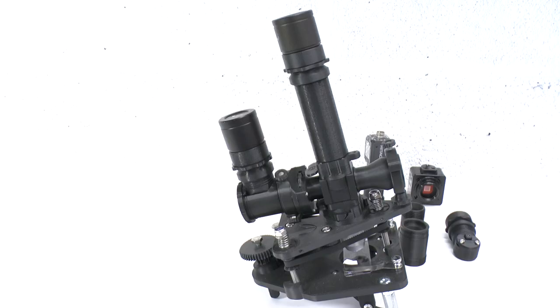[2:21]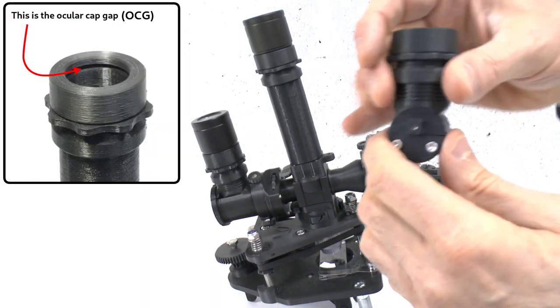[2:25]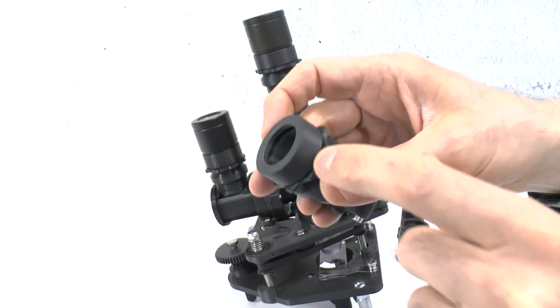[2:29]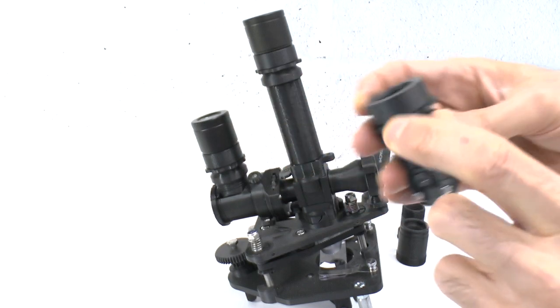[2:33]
However, if for any reason you do not want a polarizer in the light path, you can simply make a polarizing attachment without the polarizing filter. In that case, you need to reduce the ocular cap gap, or OCG, by about a quarter of a millimeter to compensate for the reduced light path caused by removing the polarizing filter. This adjustment is detailed in the video on the ocular heads.
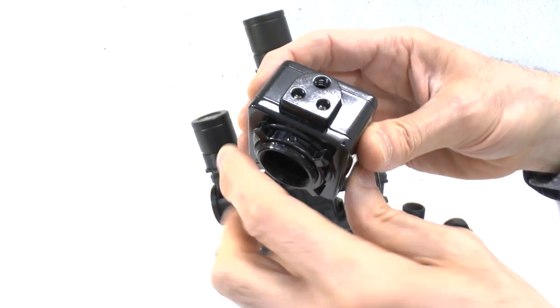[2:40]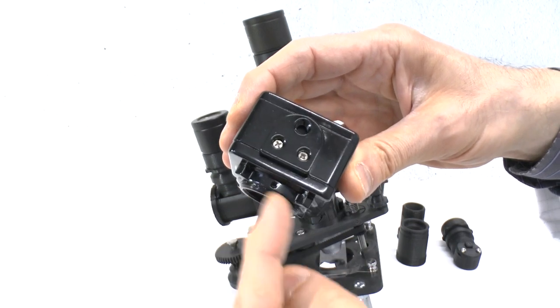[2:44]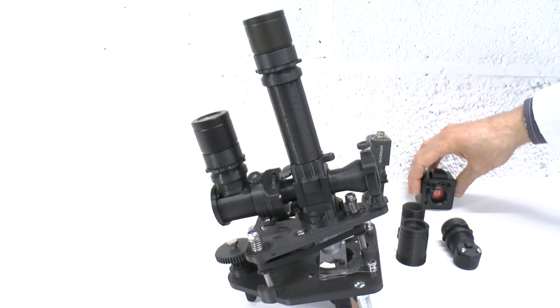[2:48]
Likewise, you will need to reduce the distance to any C-mount camera chip by the same amount using your C-mount camera's built-in focus adjustment, or by printing a shorter version of the C-mount attachment parts.
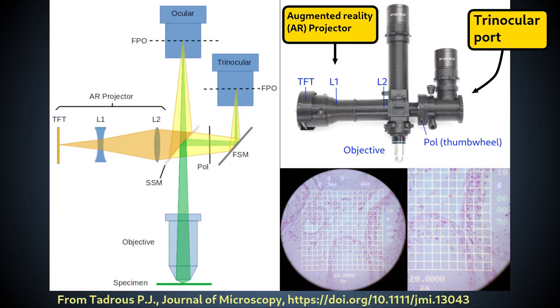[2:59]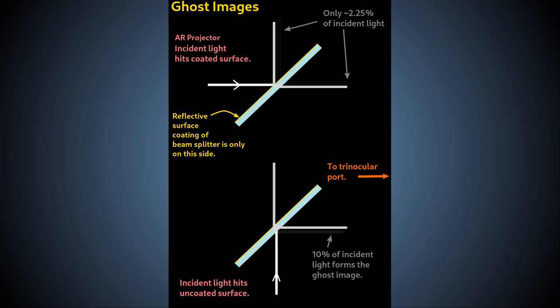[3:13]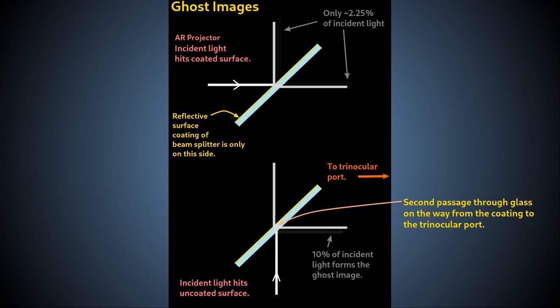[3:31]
Recall from the video on beam splitters and the advanced filter block that we built the filter block with the coated surface of the beam splitter facing the AR projector port because we want the best quality image from the projector. For this reason, using the opposite side of the beam splitter for imaging into the trinocular camera port results in a suboptimal image due to the fact that the imaging beam from the objective will now have to pass through the beam splitter glass twice, and it also hits the non-coated surface of the beam splitter before it reaches the coated semi-reflective surface. This can result in a visible ghost image, that is, a secondary weak reflection image that is offset relative to the main image.
The first issue results in chromatic and spherical aberrations, which we can't do much to correct without additional expensive optics. However, these aberrations are limited due to the very thin amount of glass used in the beam splitter plate, and so the image is still usable.
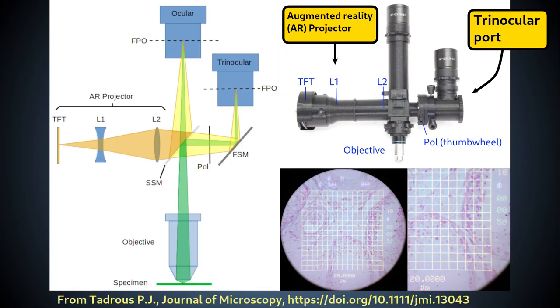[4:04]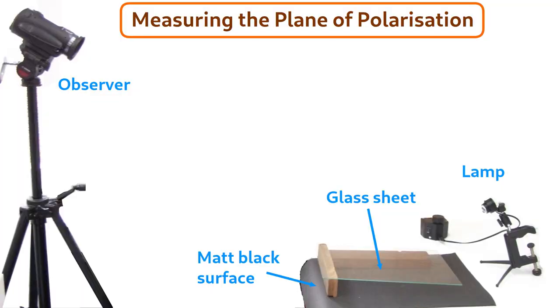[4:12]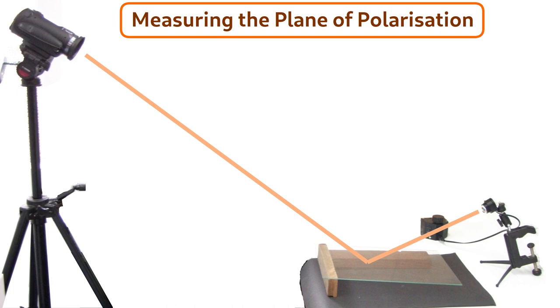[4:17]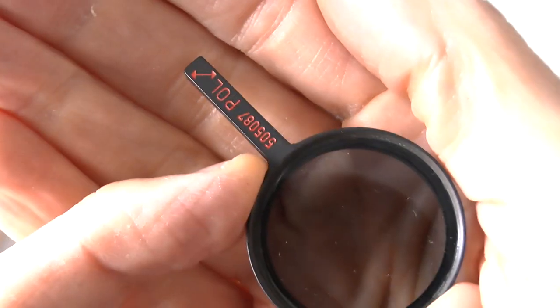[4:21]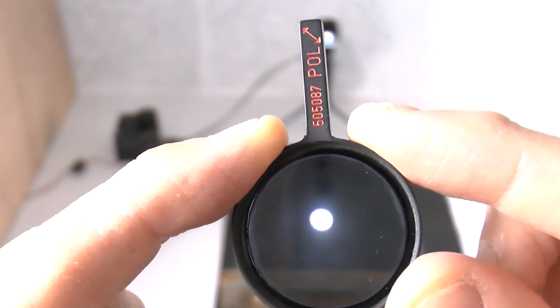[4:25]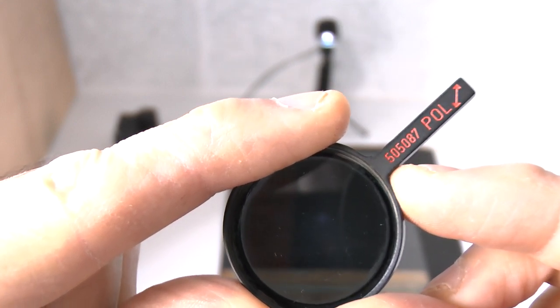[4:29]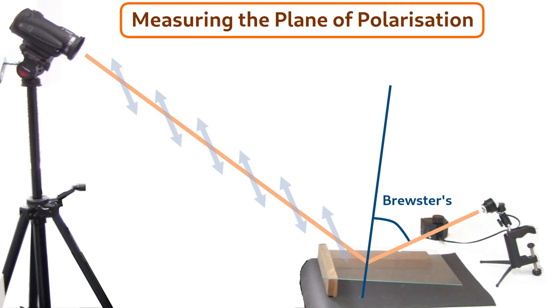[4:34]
The second issue of ghost images can be addressed by placing a rotatable polarizer in the imaging beam path. This can help because the image reflected from the plain glass surface of the beam splitter will be partially polarized due to the physics of reflection at a refracting surface, as was demonstrated in the video on the transpolarizing illuminator. There we saw how the maximum polarizing effect occurs at a specific angle of reflection called Brewster's angle.
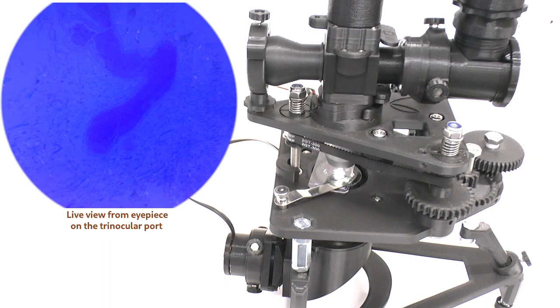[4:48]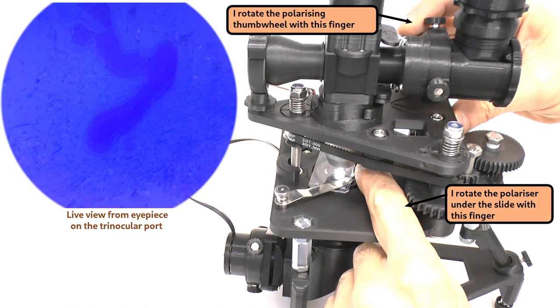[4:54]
Now, we have no control over the angle of reflection here. It has to be 45 degrees for the beam splitter to function as intended. So, the reflected ghost image beam will not be fully polarized. Nevertheless, it will be partially polarized and so can be partially attenuated using a polarizing filter, as shown in this demo.
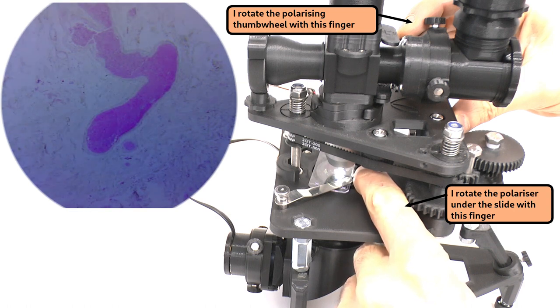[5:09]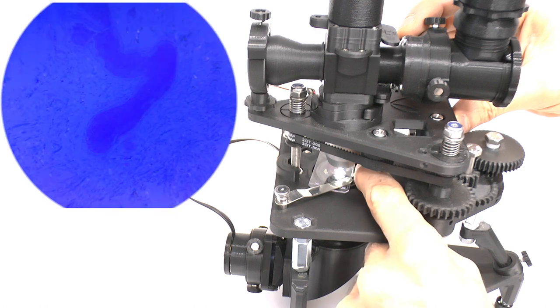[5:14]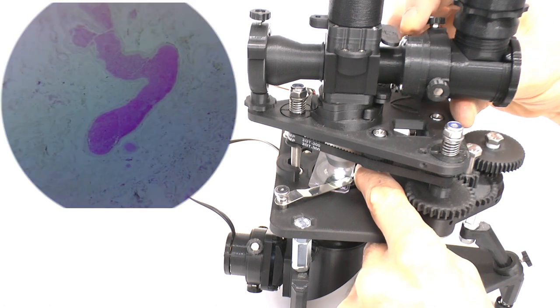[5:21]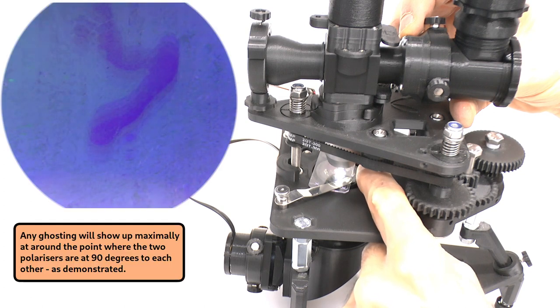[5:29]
In this demo, I use a rotating polarizer that fits on top of the condenser, and in this situation, the rotatable polarizing thumb wheel of the trinocular port acts as an analyzer. Although extinction will occur whenever these two polarizers are at 90 degrees to each other, the Brewster effect at the beam splitter means that extinction will only be partial for most starting angles of the polarizer. Whenever the extinction is low, you get an exaggerated ghost image as seen here.
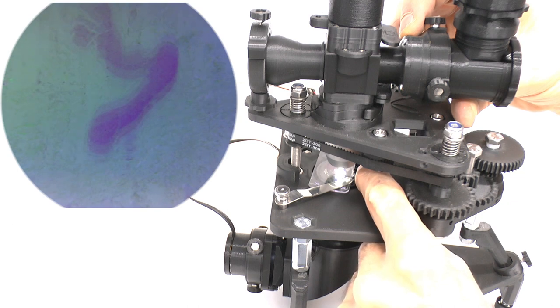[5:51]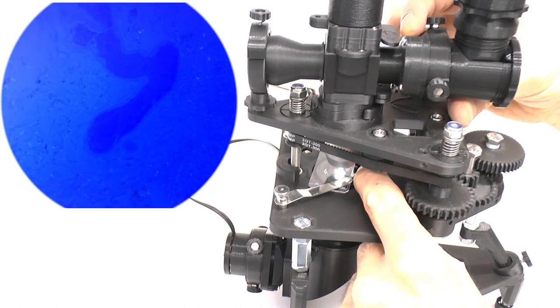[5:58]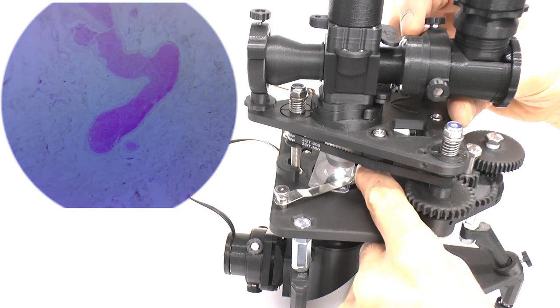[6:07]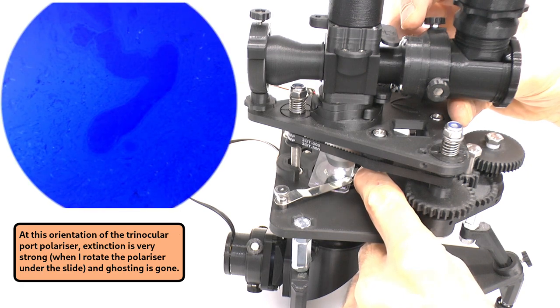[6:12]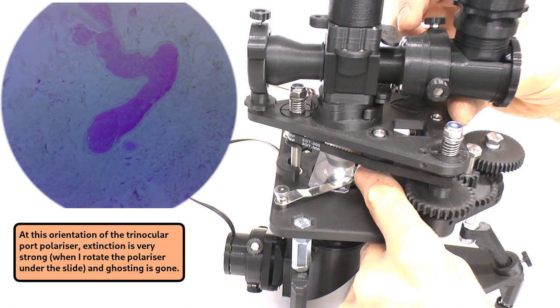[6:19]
Here the extinction is very low and the ghost image is very prominent. But if I change the angle of the crossed polars, I will eventually find an angle where extinction is maximal. And at this orientation, the ghost images seen around the extinction point effectively disappear, as you can see here. This is one of the reasons the trinocular port uses the polarizing attachment to the filter block.
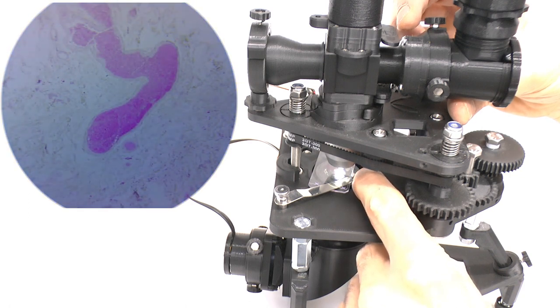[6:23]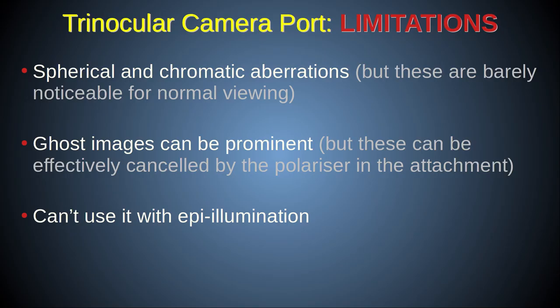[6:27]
Another limitation of using the epi-illumination port for imaging is that you can't do epi-illumination simultaneously while using the trinocular camera port. That is, unless you put the epi-illuminator on the top of the filter block in place of an ocular head, but then that would bring its own problems. So, with all these limitations of the trinocular camera port, why bother with it at all?
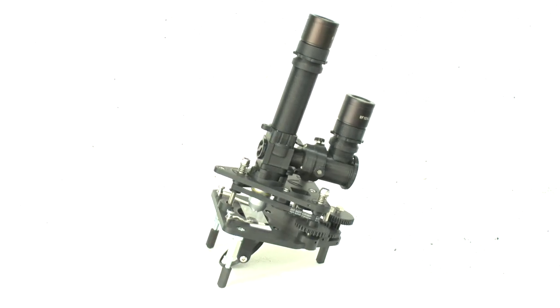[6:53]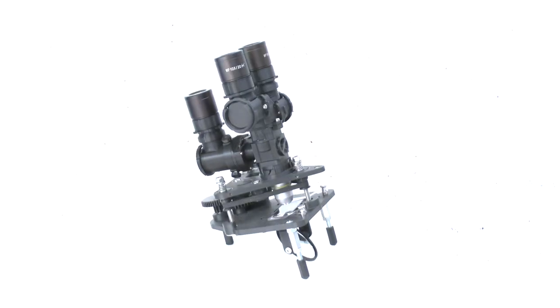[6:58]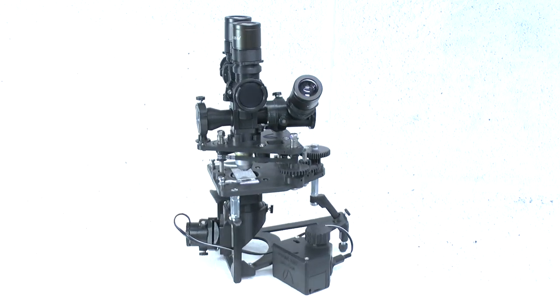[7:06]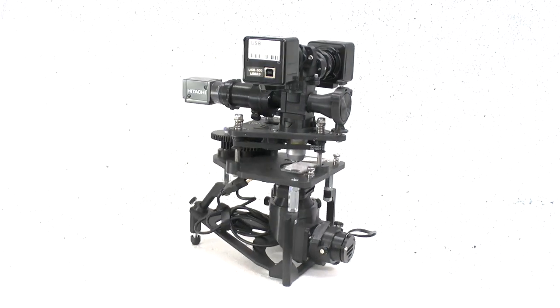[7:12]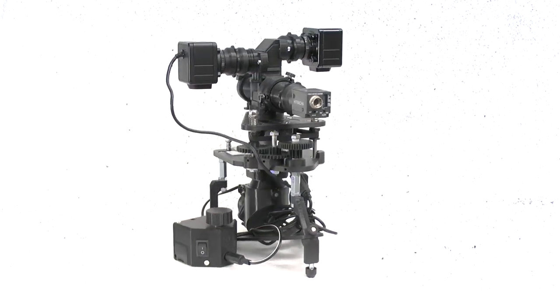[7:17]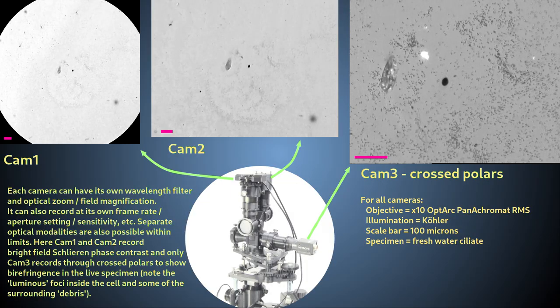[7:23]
Well, there are two major advantages of the trinocular camera port that make it a worthwhile module. The first is that because this module attaches to the side of the filter block, it can be used simultaneously with any ocular head configuration, up to and including the binocular head. This means that you can attach up to a maximum of 3 cameras to PUMA simultaneously to record different aspects of the same sample at the same time. For example, by using different types of camera, aperture settings, shutter speeds, cross-polarization angles, wavelength filters, magnifications, etc.
This is especially important for samples that are dynamic and change quickly over time, such that sequential imaging would be inadequate. Here I show one such application on an actively moving sample.
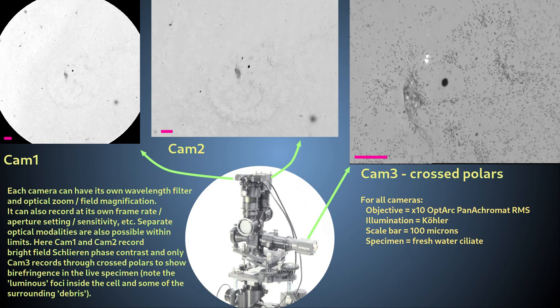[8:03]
For this, I record with afocal eyepiece projection on the lower outlet of the binocular head to give a whole field of view image, while at the same time I use afocal eyepiece projection to a different camera on the upper outlet of the binocular head, which uses a different camera lens to give a higher magnification image of the same object. And also, I record at the trinocular camera port using C-mount direct chip projection and crossed polarization to give the highest magnification image in a different modality.
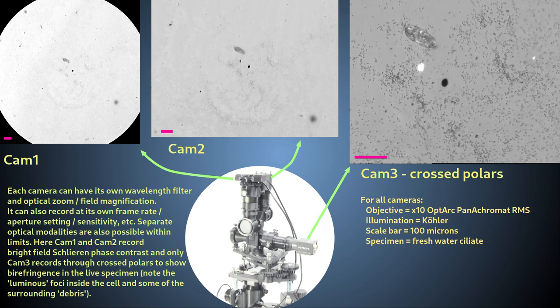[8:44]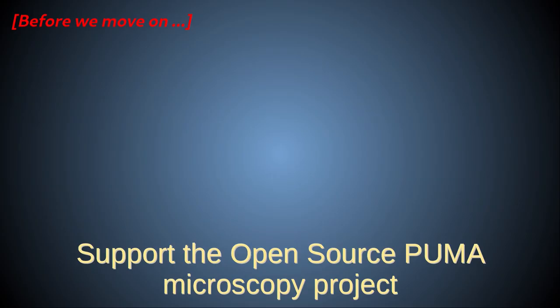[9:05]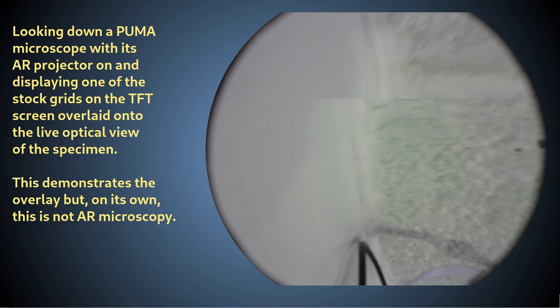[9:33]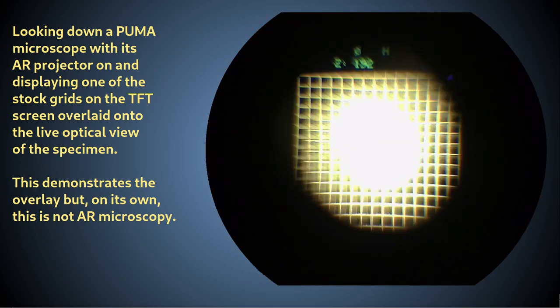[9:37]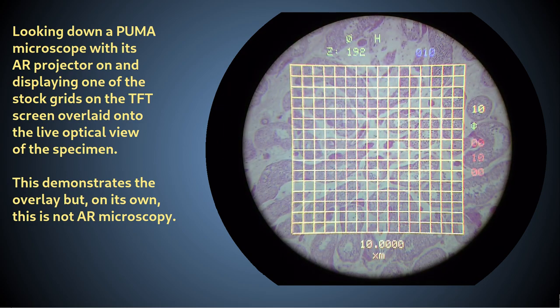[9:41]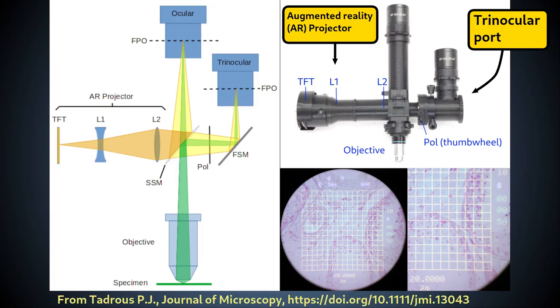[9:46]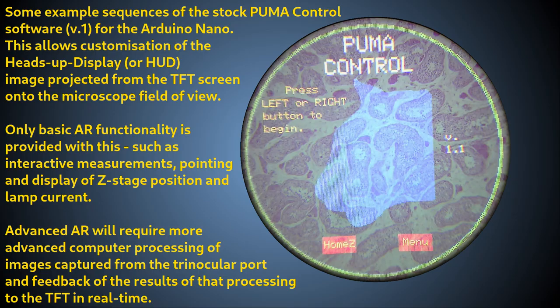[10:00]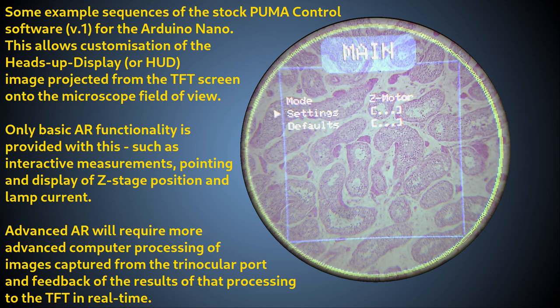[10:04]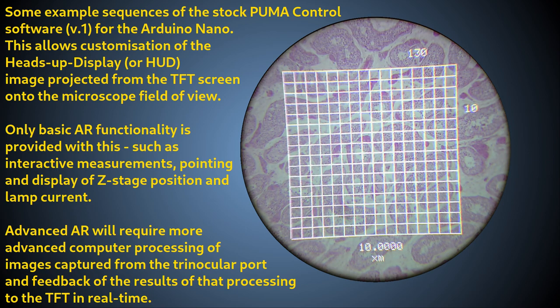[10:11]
The second major advantage of the trinocular port is its ability to enable augmented reality, or AR, microscopy by optical erasure of the HUD. This needs a bit of explanation. The AR projector will be described in another video, but essentially it projects an image of a computer-controlled TFT screen and superimposes this image onto the focused primary optical image of the specimen formed by the objective. This enables the user to see the information on the TFT screen at the same time as the specimen while looking down the ocular. This kind of hybrid display, where a video image is projected onto a live optical view, is called a heads-up display, or HUD.
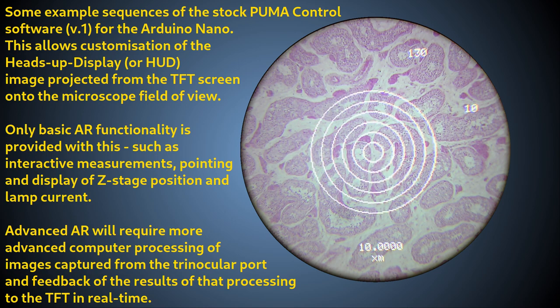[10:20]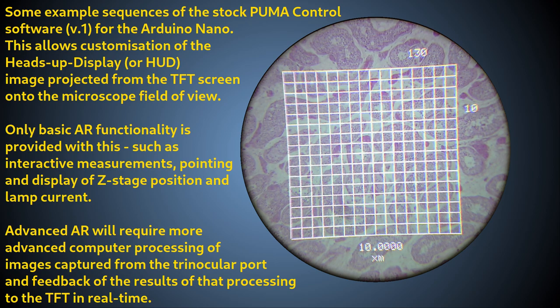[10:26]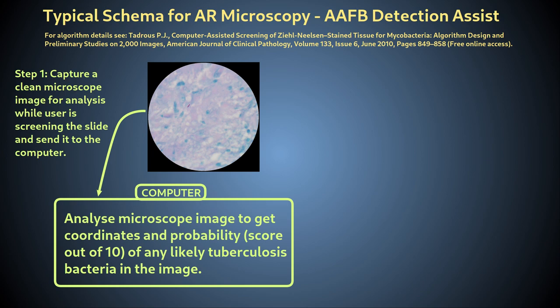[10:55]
A digital HUD on its own is not AR, but it can be used to implement AR by allowing you to see additional information about the optical scene you are looking at. For example, the HUD can be made to highlight certain features of the specimen according to some criteria, such as whether those features are abnormal in some way, or by providing additional information about certain objects, such as measurements or motion tracks. In this way, the optical view down the specimen, that is, the reality, is augmented by the digital overlay HUD. To implement advanced AR, a programmer needs to analyze the scene you are currently looking at in order to produce the augmented information about it.
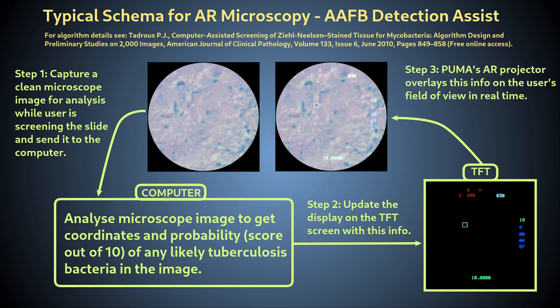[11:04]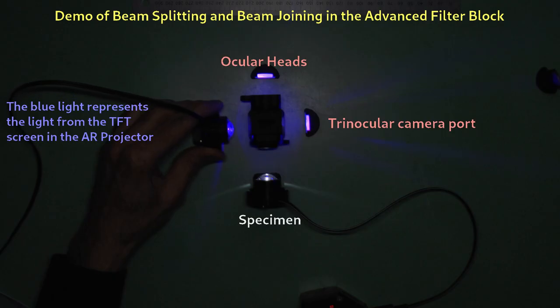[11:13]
The AR software must therefore capture images of the scene at the same time as you are looking at the scene. However, there is a potential problem in doing this. Recall from the demo in the video on beam splitters and the advanced filter block that the AR projector will project its HUD image onto all outputs of the beam splitter. This means that any camera at any outlet will see the superimposed HUD, and this will partly obscure the image and so hamper attempts to process the captured image of the specimen to get the required information. This can be especially a problem if your AR system is trying to get information about tiny particles that could get obscured under bright HUD features.
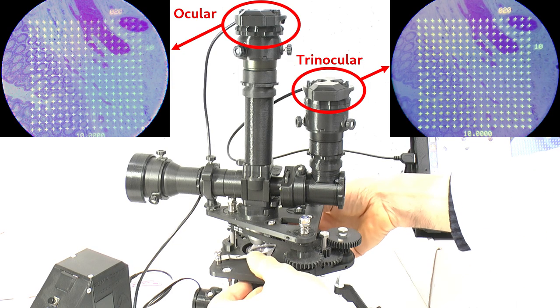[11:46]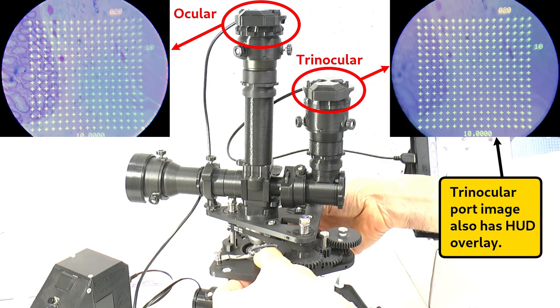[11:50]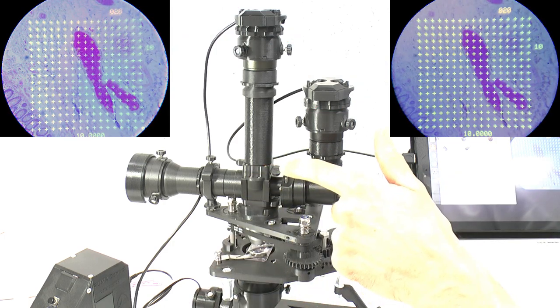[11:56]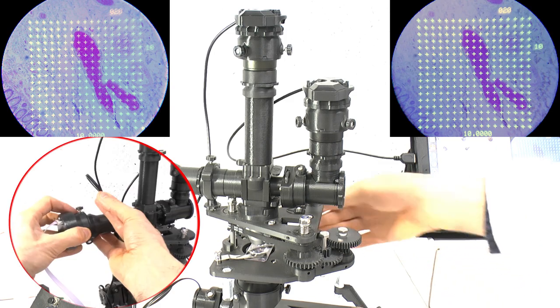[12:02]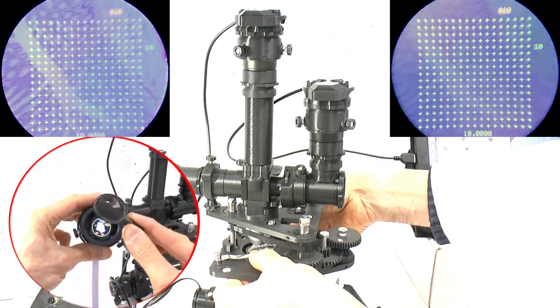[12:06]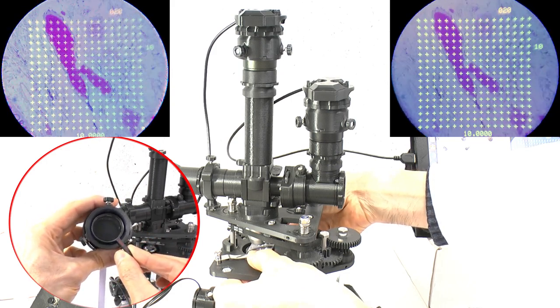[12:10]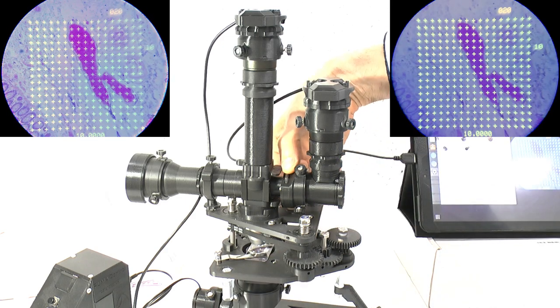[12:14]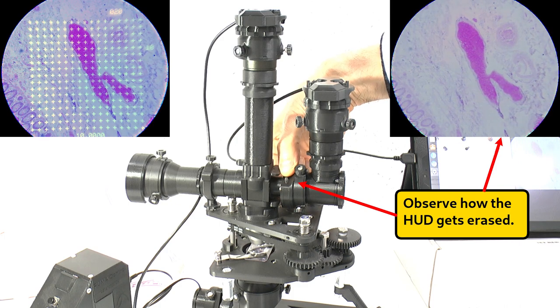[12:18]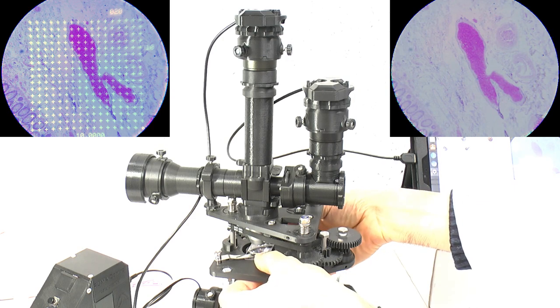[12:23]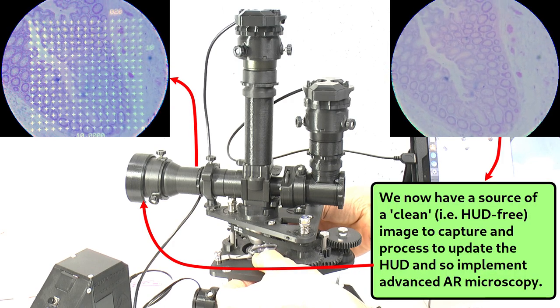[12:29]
So, how does the trinocular camera port help, since the image here is also contaminated by the HUD overlay? The answer is to use the trinocular port's rotatable polarizer to optically erase the HUD from the image in this port only. This works because the HUD is generated by a TFT display module, and the light from the TFT display used in PUMA is linearly polarized. By setting the plane of polarization of the trinocular port polarizer at 90 degrees to the plane of polarization of the TFT display, you effectively filter out the TFT display image, thereby optically erasing the superimposed HUD in this port only. You can now record a clean image of the specimen at the trinocular camera port, while the user continues to see the HUD superimposed on their visual fields.
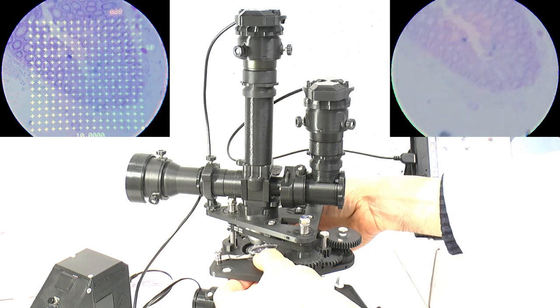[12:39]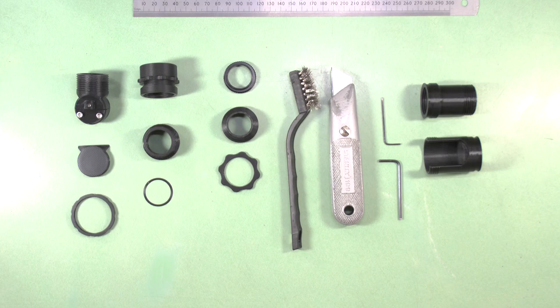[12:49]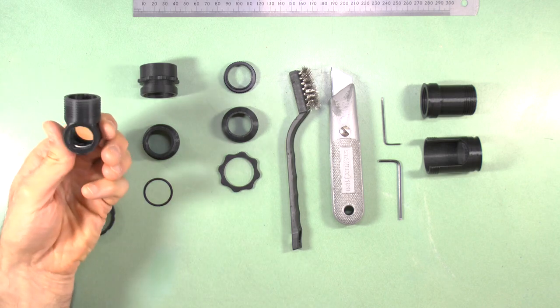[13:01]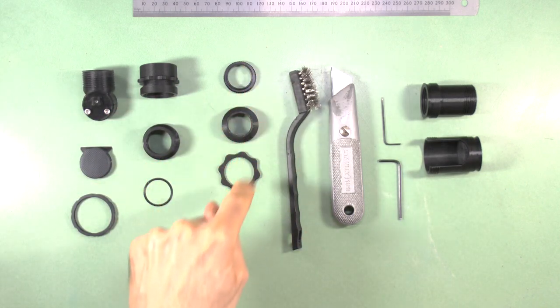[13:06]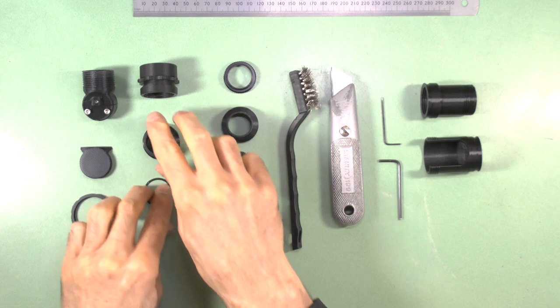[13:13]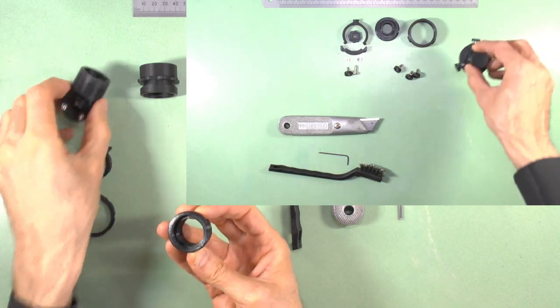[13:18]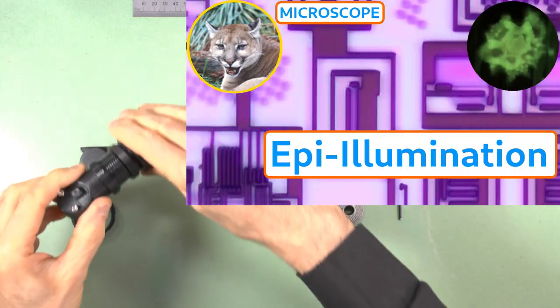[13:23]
These are the parts and the tools you'll need to build the trinocular camera port. Thanks to PUMA's modular ethos, much of this was covered in previous videos, so will not be repeated here. The making of the ocular mirror block, adjustable ocular holder assembly, and the parts for attaching a C-mount camera, as well as the parts for attaching the ocular mirror mount to the mirror block tube, are exactly the same as was described in the video on the ocular heads. The polarizing connector to the advanced filter block was described in the videos on the transpolarizing illuminator and epi-illumination.
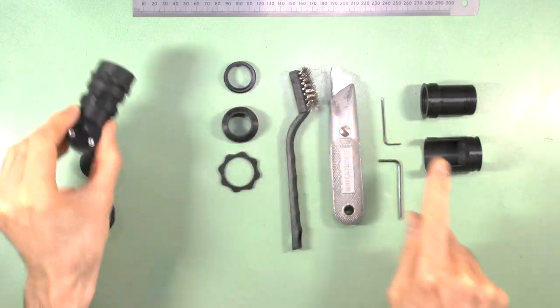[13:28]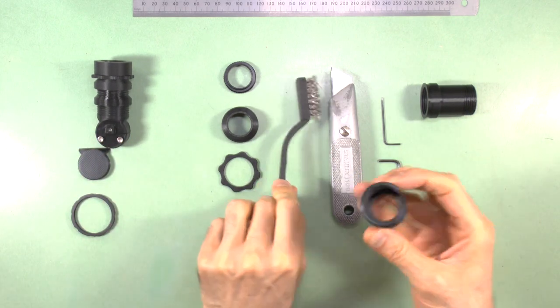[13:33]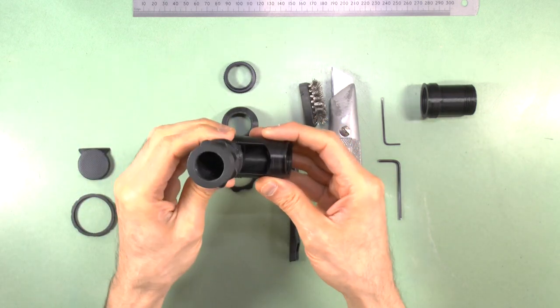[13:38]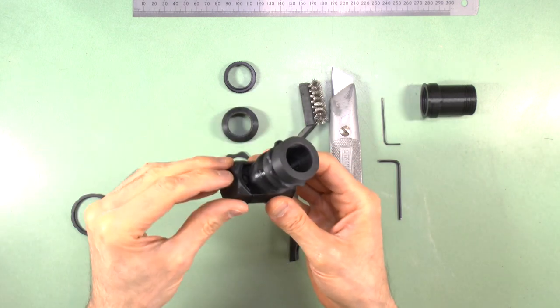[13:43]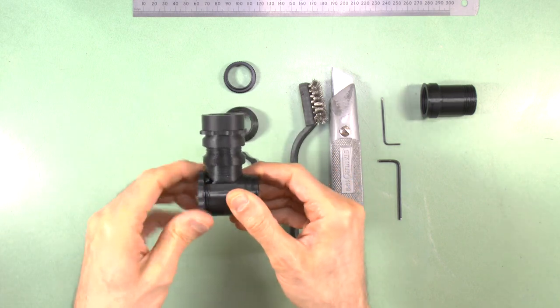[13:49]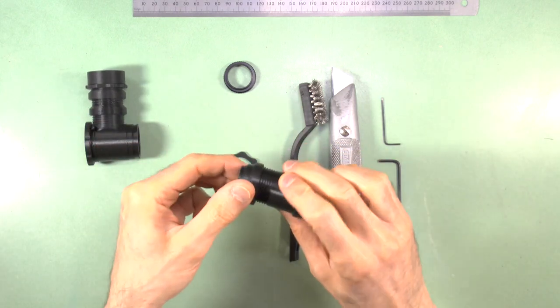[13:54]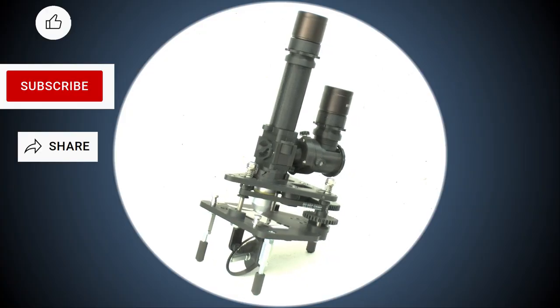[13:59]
The modified MBT and the modified C-mount ocular thread just need printing and cleaning up from any stray plastic as usual. Slide in the ocular mirror block into the modified MBT without any tube spacers, and fix it in place with the same light shield cap and ring nut as described in the video on the ocular heads. For the C-mount system, simply thread the C-mount extension fully onto the modified C-mount ocular thread. Your trinocular camera port assembly is now complete and ready to use.
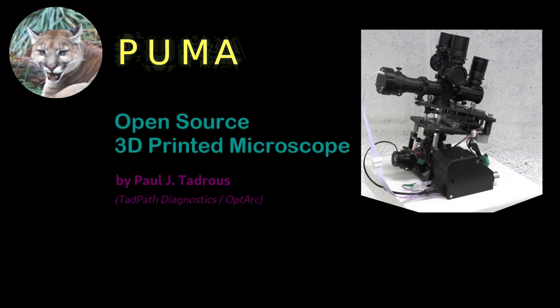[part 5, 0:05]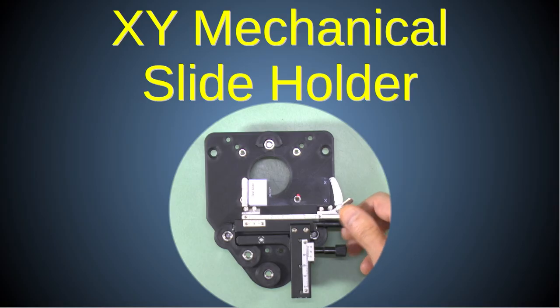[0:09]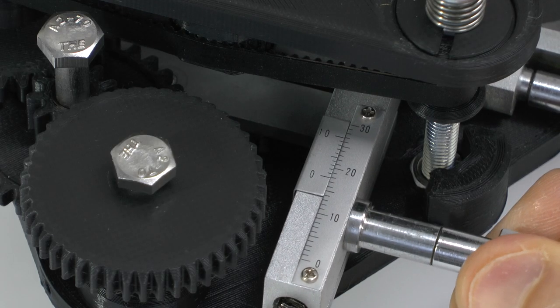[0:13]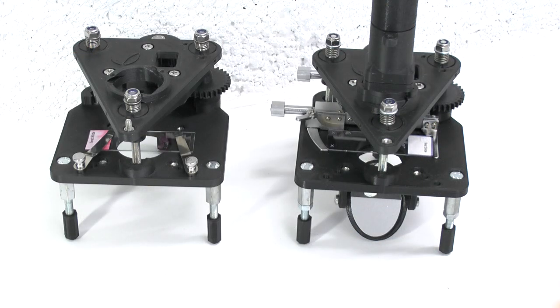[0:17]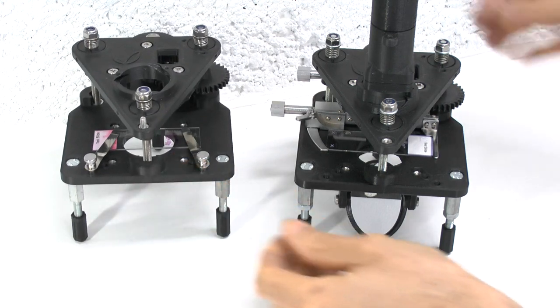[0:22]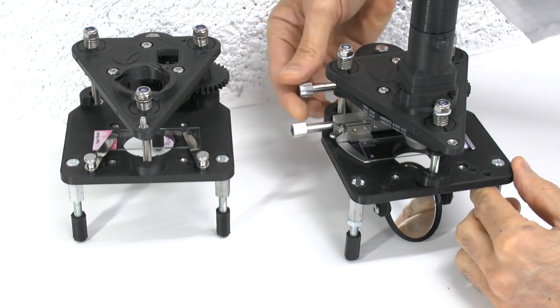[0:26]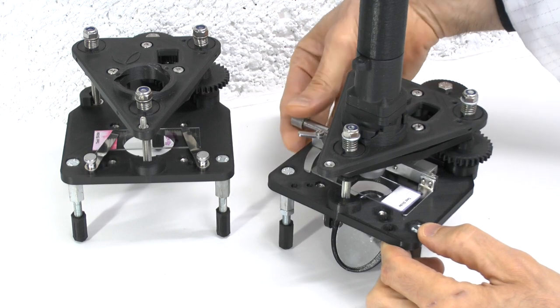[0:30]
In this video, I'll show you how to add a mechanical XY slide holder with a vernier measurement scale to the stage of the PUMA microscope. While stage clips are great for holding a slide still on the stage, if you want to move a slide around, either to screen it or to chase a moving target, then a precision mechanical XY slide holder is preferable.
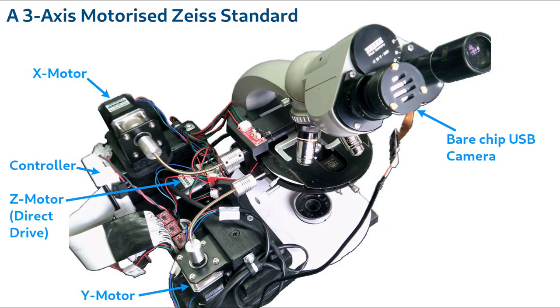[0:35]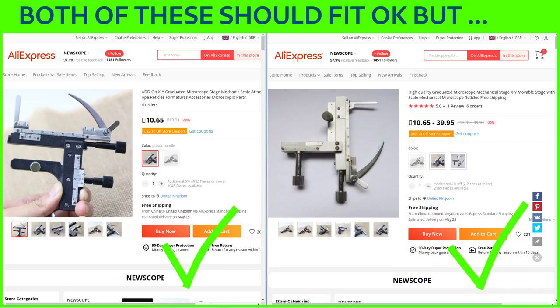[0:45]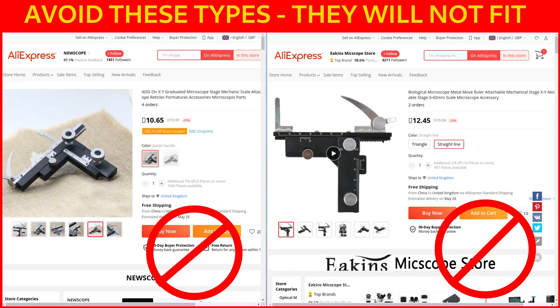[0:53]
Mechanical slide manipulators can also be motorized for computer-controlled slide scanning or automated specimen tracking, although I won't be describing motorization in this video. PUMA can use one of these two alternative XY stage modules. Each has its pros and cons, as I'll describe. However, there are some modules that can't be used with PUMA because they won't fit with all the other necessary parts of the stage mechanism.
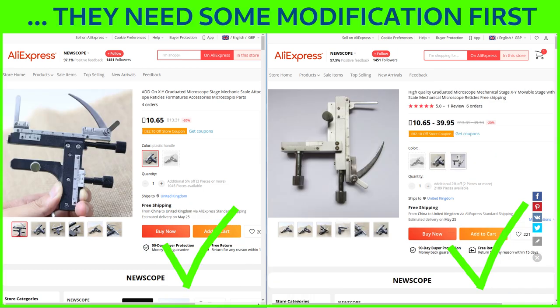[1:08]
For example, you can't use this model, even though it is a good quality holder. Because of the various size and shape restrictions of the PUMA design, you can't just buy one of these modules and attach it. Some custom modification will be needed first, as I'll show you.
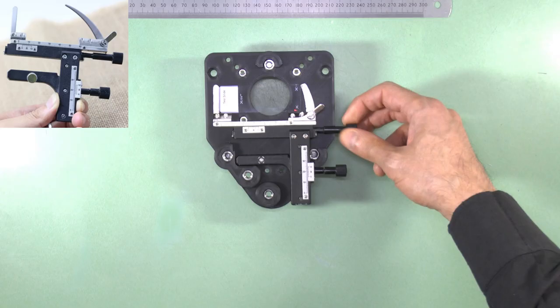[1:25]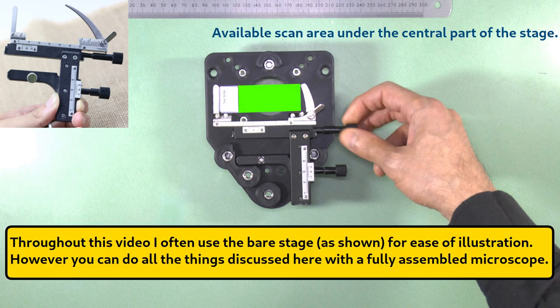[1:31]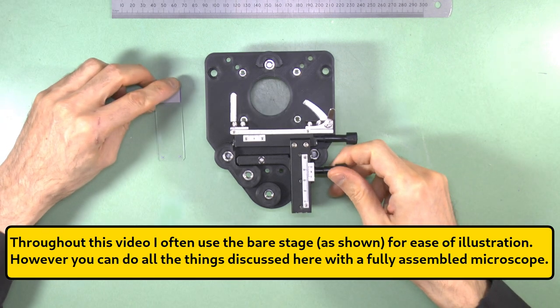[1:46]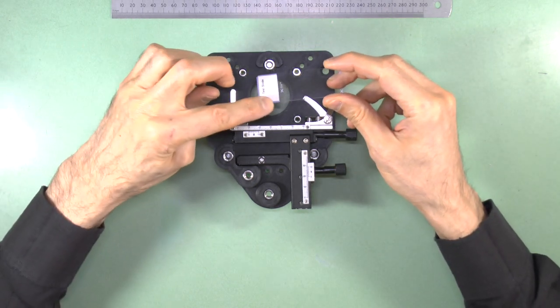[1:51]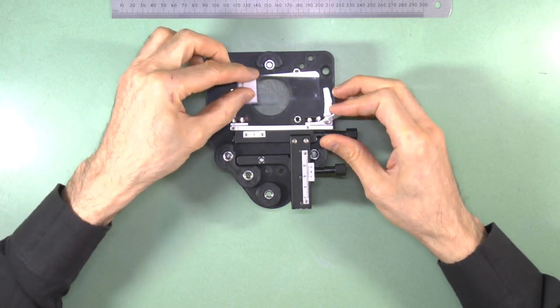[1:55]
The cheapest slide holder is the one that PUMA was originally designed to use. Apart from low cost, it has the advantage that you can use it to screen the whole part of a standard 25x75mm microscope slide that would normally be used to mount a specimen, so excluding the part at one end that would normally contain a label. To achieve this maximal area of scanning, you need to insert the slide with the label end against the straight arm of the holder, as shown.
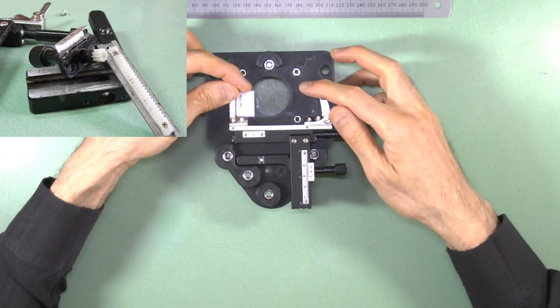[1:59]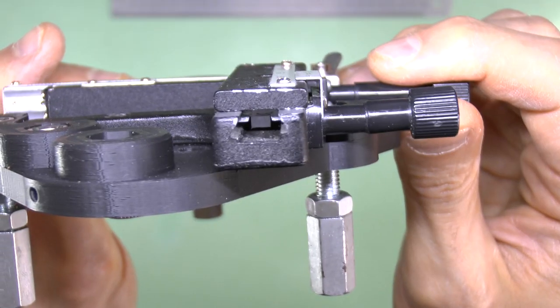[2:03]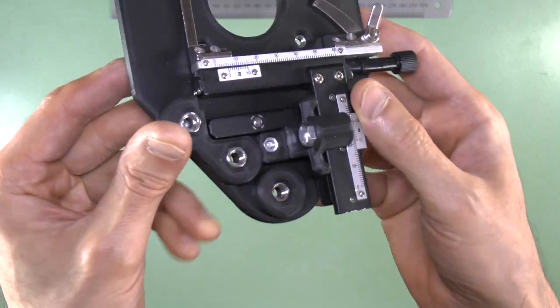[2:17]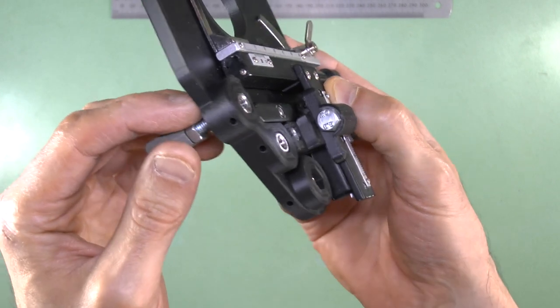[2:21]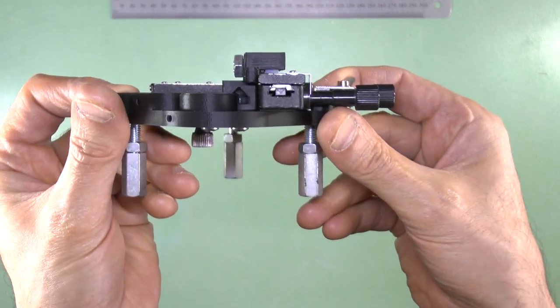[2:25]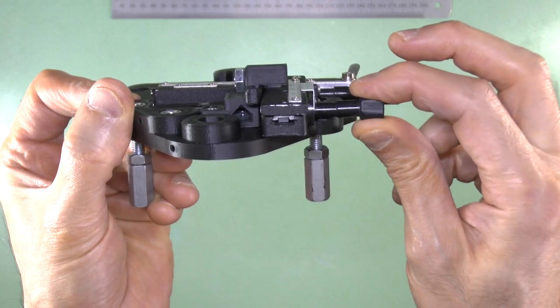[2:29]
Its limitations are that it has plastic gears that can get damaged more easily than metal gears. Some, but not all of them, also suffer from some lift of the X-boom that can be distracting when moving a slide by hand, because each time you handle the X-control, the slide can go out of focus. The PUMA XY stabiliser module, discussed later, was designed to reduce this lift. Also, it may not be such a problem if the slide holder is motorized with a stable motor mount instead of being used by hand. Another problem with this cheaper model is that they tend to suffer from slight dimensional variations depending on manufacturer, which may require you to make additional modifications prior to use, as I'll describe later.
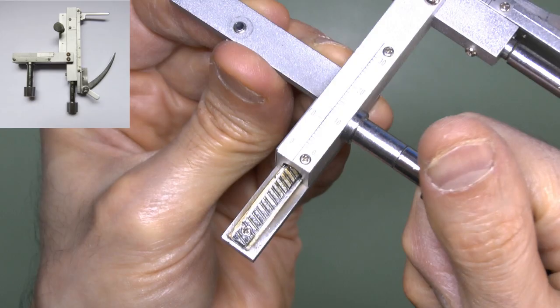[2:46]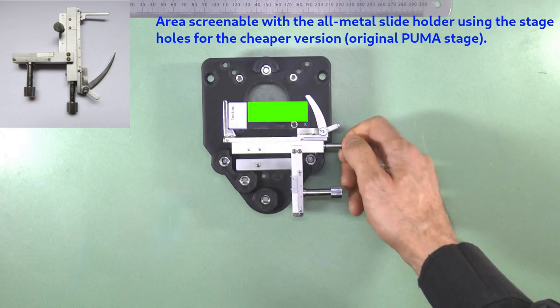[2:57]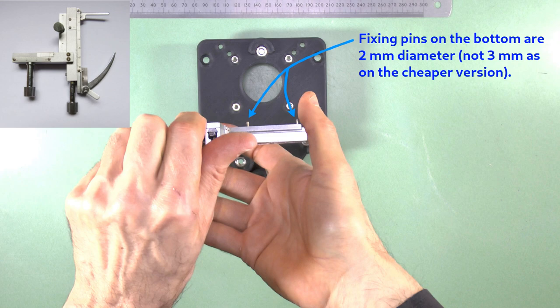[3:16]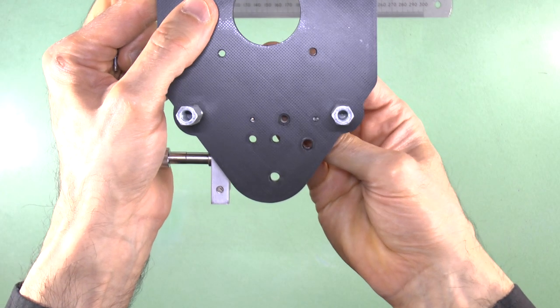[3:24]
The alternative slide holder has the advantage of all metal construction, including the gears, and it is of overall better quality, but costs about 3 times the price of the cheaper version. It can be used with the original PUMA design for the stage, but doing this brings 2 limitations. The first is that it restricts the full range of Y motion, so it can't fully screen the same area of a slide as the cheaper holder. And secondly, these fixing pins are 2mm in diameter instead of the 3mm pins used by the cheaper model, so there is some play in the fit.
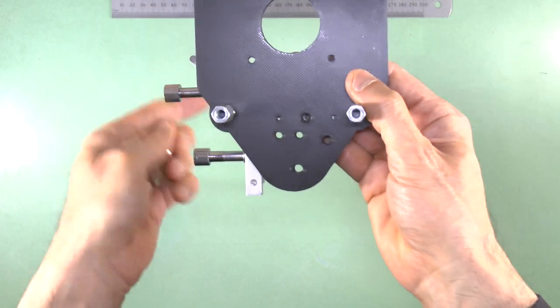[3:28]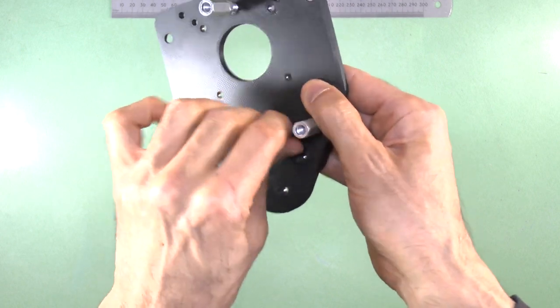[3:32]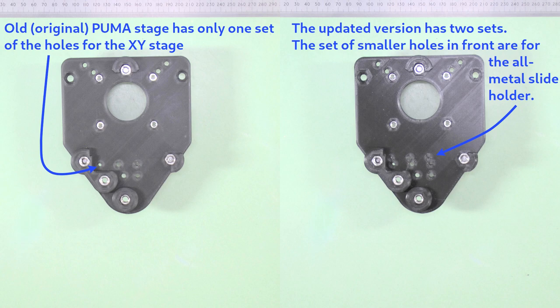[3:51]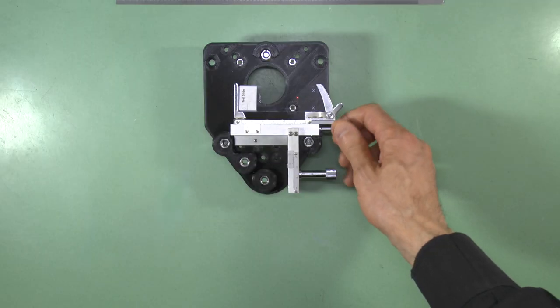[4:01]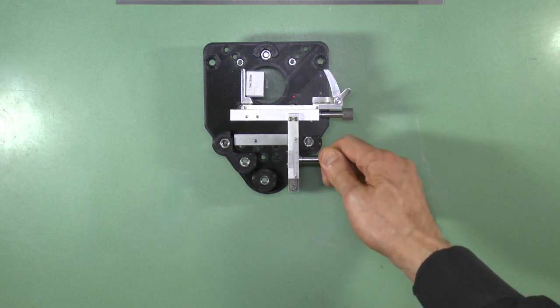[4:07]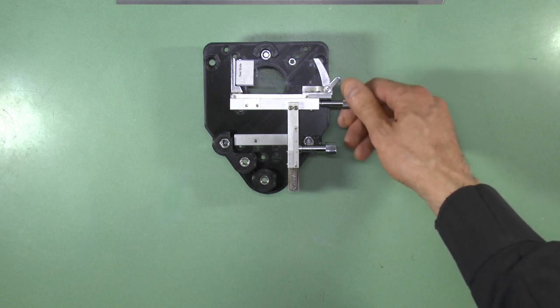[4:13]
However, to give people the option to make fuller use of this higher quality holder, I've updated the stage base plate to add a new set of holes, offset by just the right amount to allow this high quality holder to screen the same whole slide surface as the cheaper unit. Furthermore, the new holes for the pins are smaller to prevent play in the fit. There are no other differences in the new base plate, so this is entirely backwards compatible with existing PUMA microscopes and can be swapped in as an upgrade if you want to use this high quality slide holder to best effect. Having said that, even this all metal holder still has a little play in the X-boom, but not as much as the cheaper version. Note that the XY stabilizer system described later cannot be used with this metal holder.
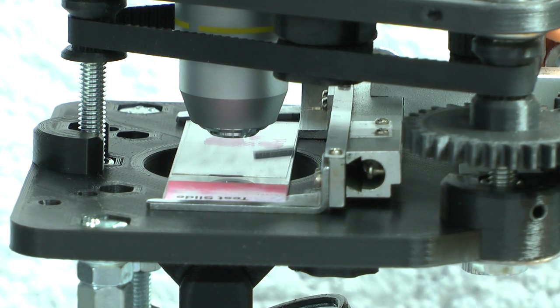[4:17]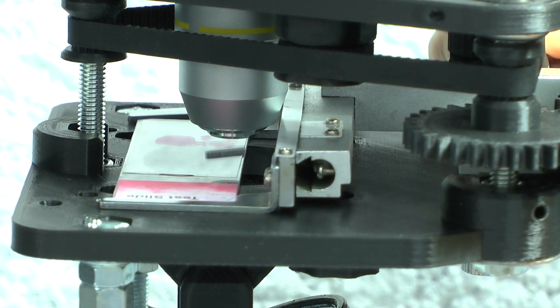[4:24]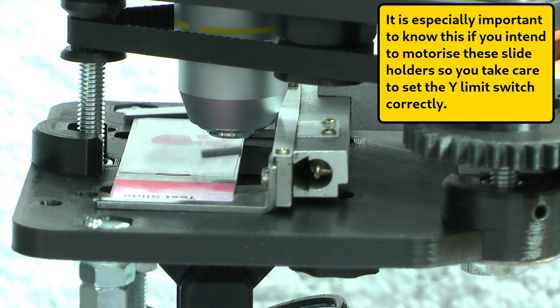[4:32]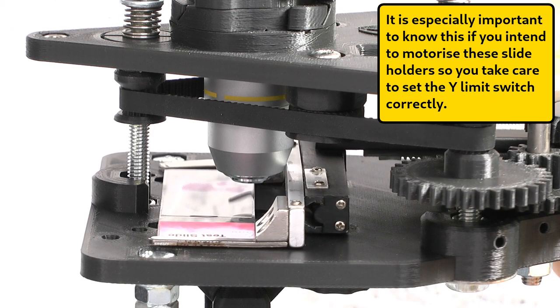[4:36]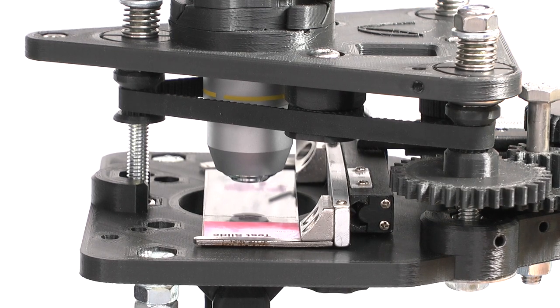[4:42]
Finally, an important limitation of both these slide holders is that they can bump into long objectives that are close to the specimen. These are often higher magnification objectives, and this will limit their range of Y motion regardless of which type of holder or base plate is used. It can also damage your objective if you're not careful and mindful of this fact. So bear this in mind when using either of these mechanical slide holders.
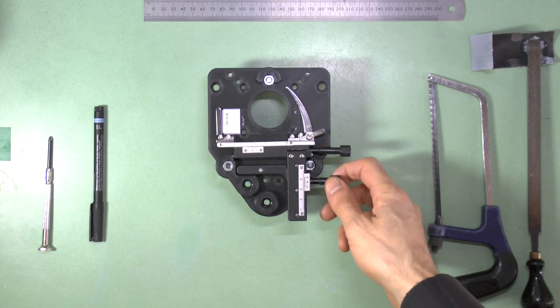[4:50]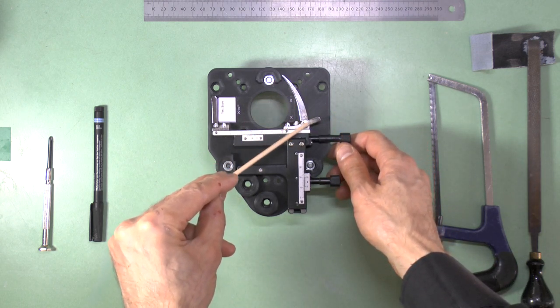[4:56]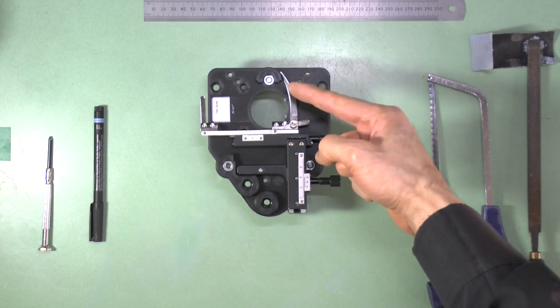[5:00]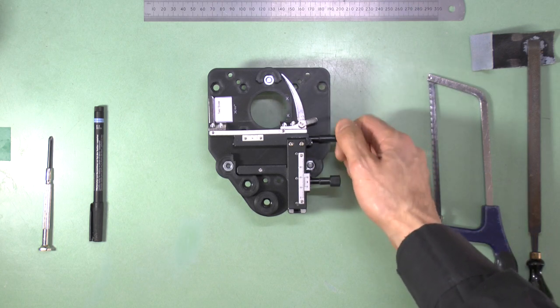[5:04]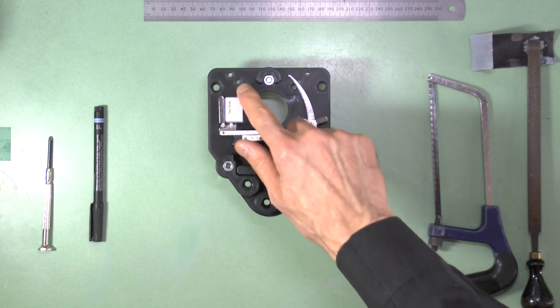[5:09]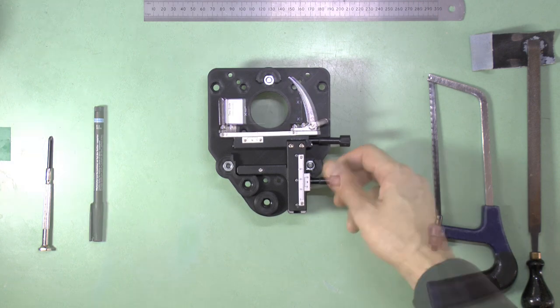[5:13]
Both types of slide holder need some modification before use. The first modification is the need to truncate the long curved arm. This must be shortened, otherwise it gets caught on the PUMA front focus post. It's important not to shorten it too much though, because then it won't hold the slide well. The correct procedure and measurements to truncate it are as shown in these figures.
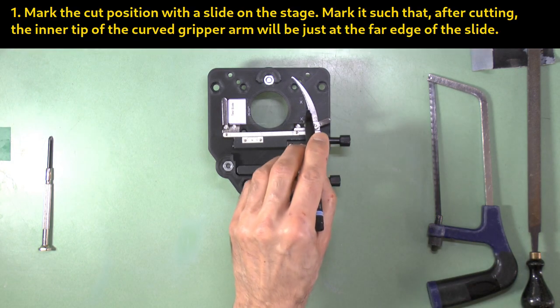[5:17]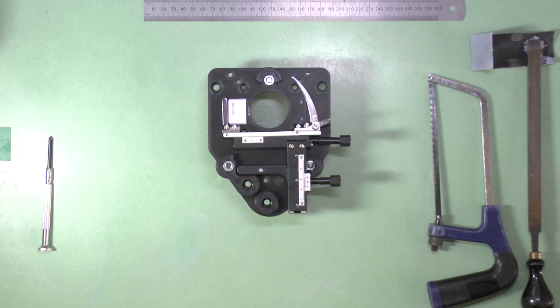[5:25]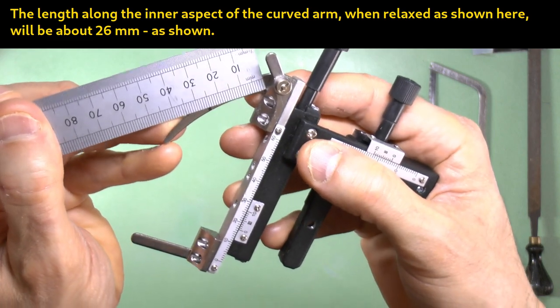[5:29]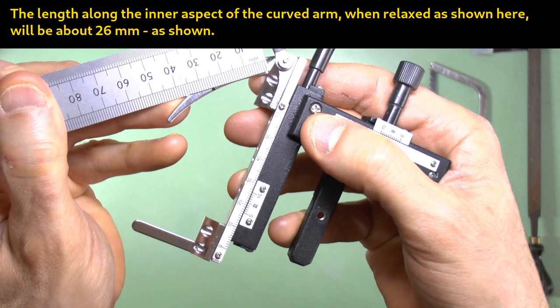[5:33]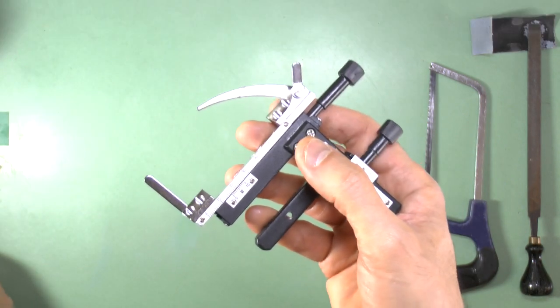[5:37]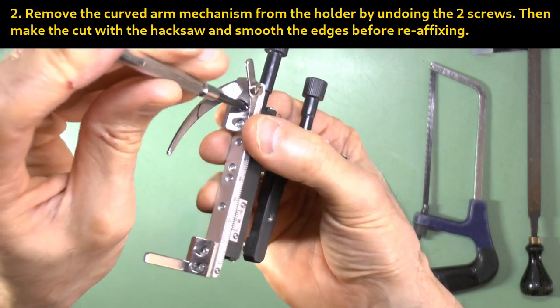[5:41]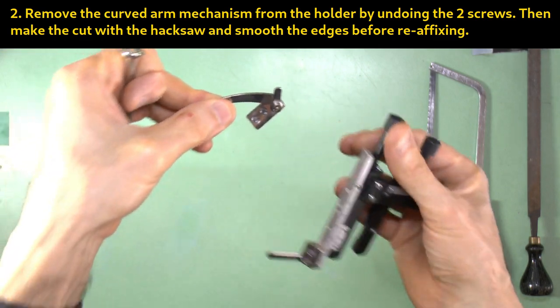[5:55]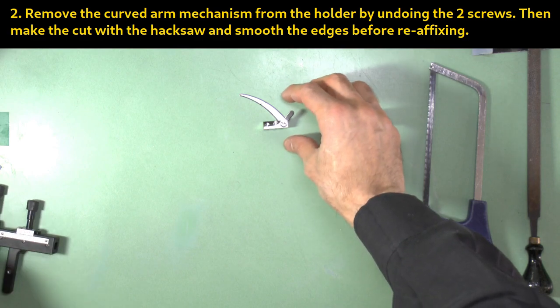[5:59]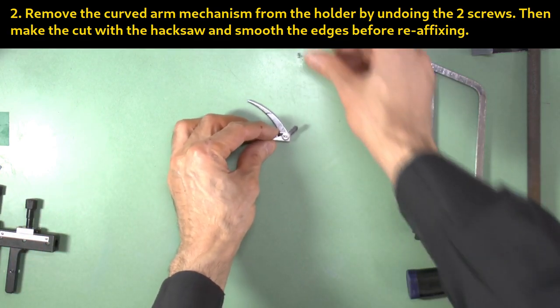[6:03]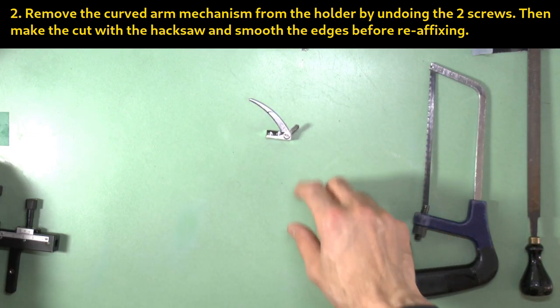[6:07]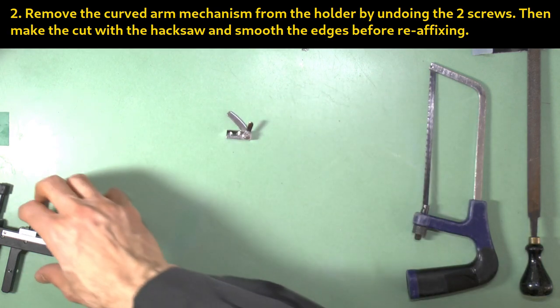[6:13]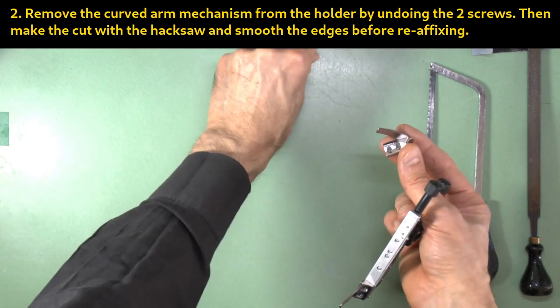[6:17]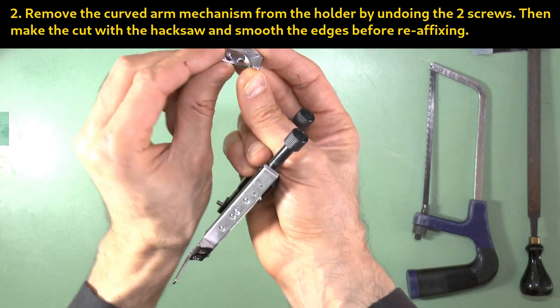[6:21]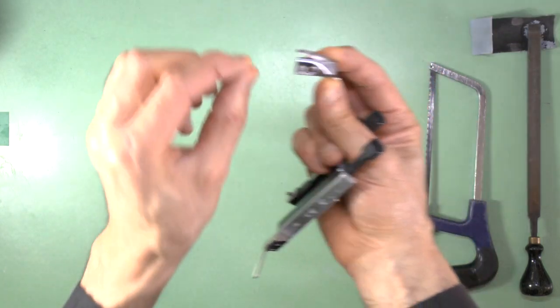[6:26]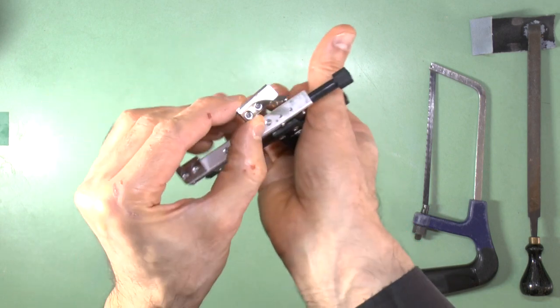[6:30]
The metal can easily be cut with a junior hacksaw and smoothed with a fine metal file and emery cloth. Be sure to wear appropriate eye, hand, and clothing protection when doing this or any metal work, and keep others away while you work, children and pets, etc., so they don't get metal dust in their eyes and lungs.
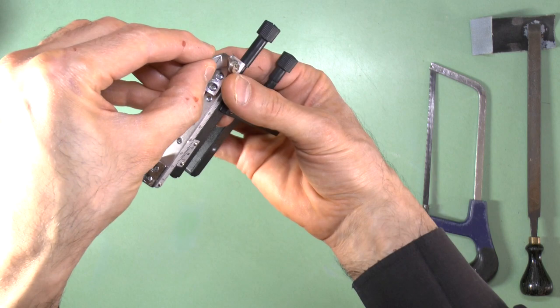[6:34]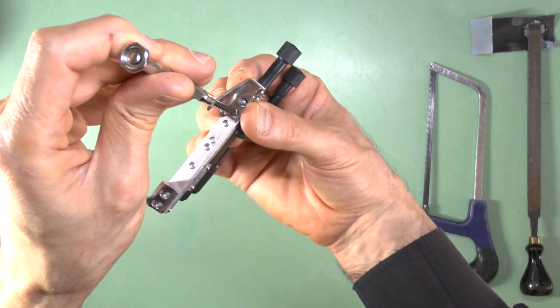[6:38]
Also, take care to do this metalwork away from any optics, and don't get metal filings in the gear mechanisms. Clear away all metal dust before taking the unit back to the microscope.
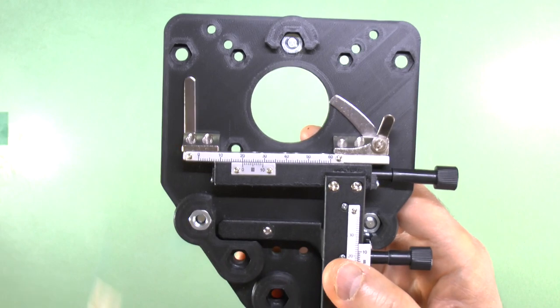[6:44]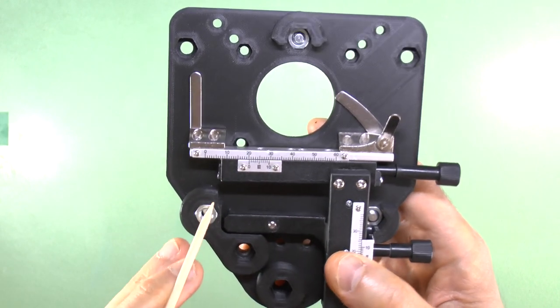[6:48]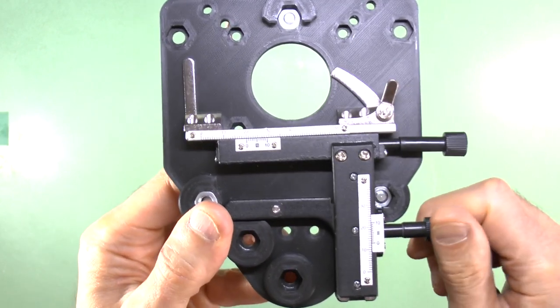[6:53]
For the cheaper slide holder, you may need to shorten the length of its X boom, so it fits into this recess. Whether you need to do this depends on the model you get. Some of them fit just fine as they are, and so need no modification.
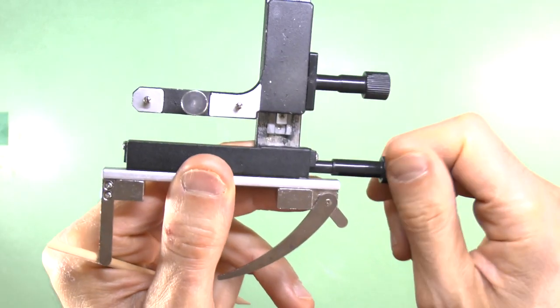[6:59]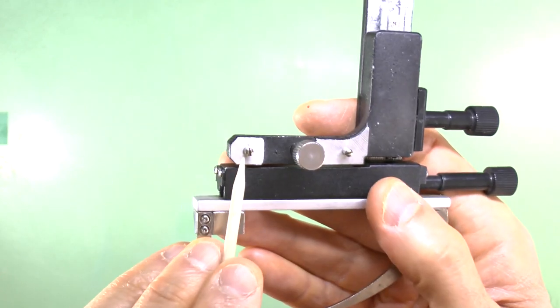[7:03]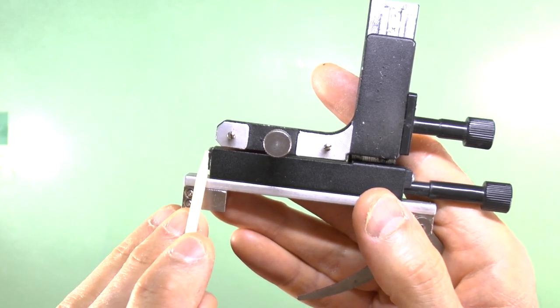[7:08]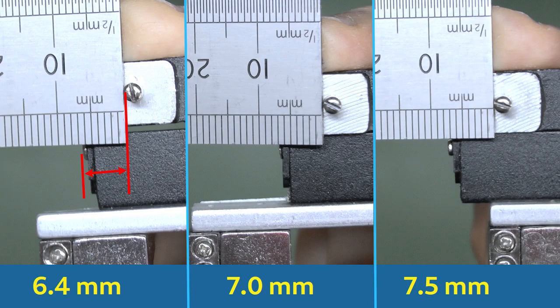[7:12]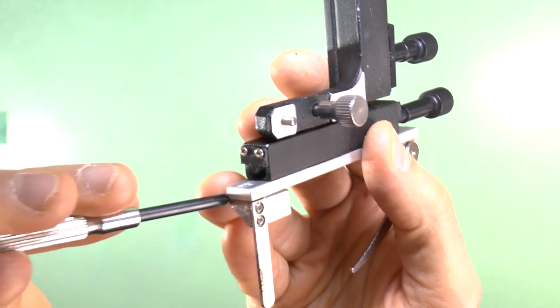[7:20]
To tell whether you need to do anything, measure the distance from the outer edge of this fixing pin to the furthest point along the fixed part of the X boom. Include any length of screw head in this measurement. This measurement must be less than 6.5 mm to fit the recess in the base plate. If it is not, then simply unscrew these two screws and remove the end plate from the X boom.
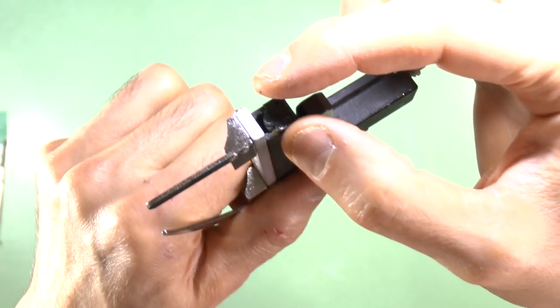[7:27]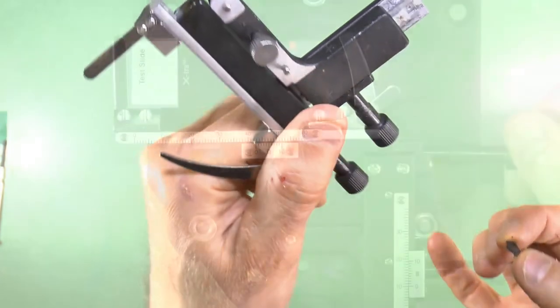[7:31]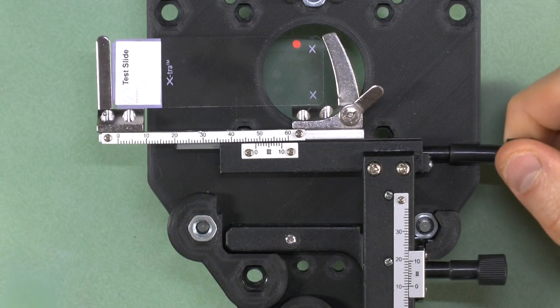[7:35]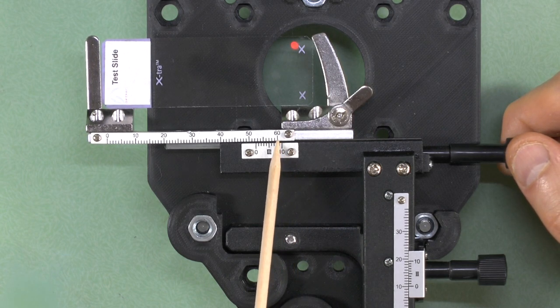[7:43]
If you do need to remove this plate, then you must be careful not to move the X mechanism too far out, or you won't be able to move it back without some help. The furthest you can move it with this plate removed is to the point where the 60 on the X millimeter scale just reaches the midway mark on the X vernier scale as shown. This is more than enough to screen a standard slide.
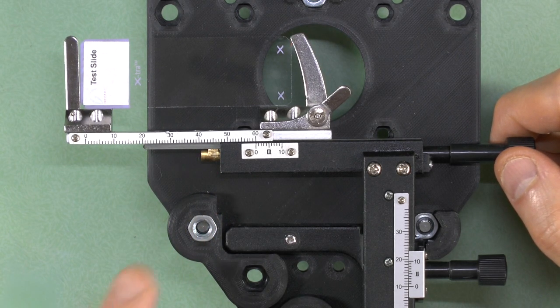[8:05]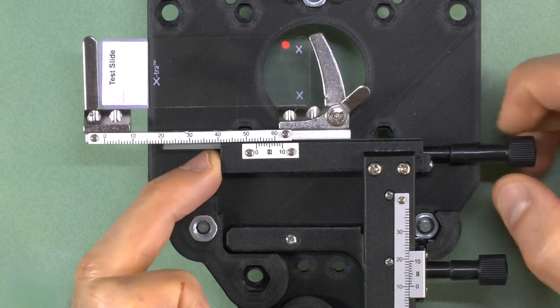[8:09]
If you do go past this point, the internal X mechanism will lose its thread connection and you won't be able to retract it using the X control unless you simultaneously apply pressure to the protruding mechanism while turning the control back.
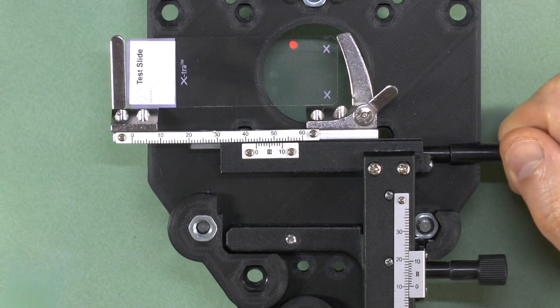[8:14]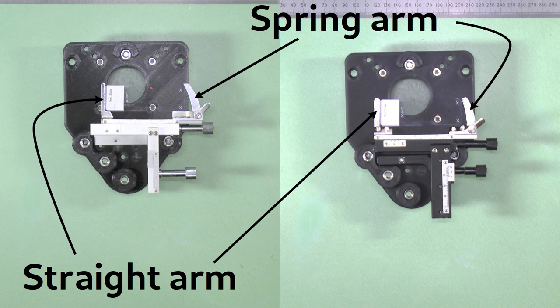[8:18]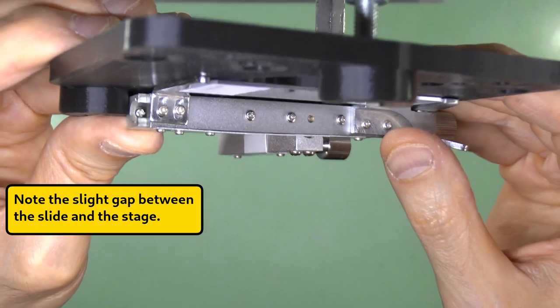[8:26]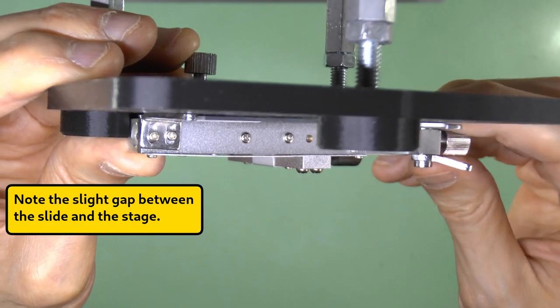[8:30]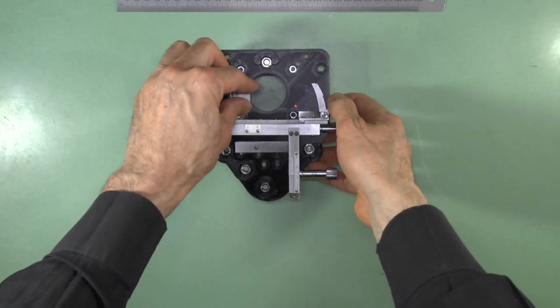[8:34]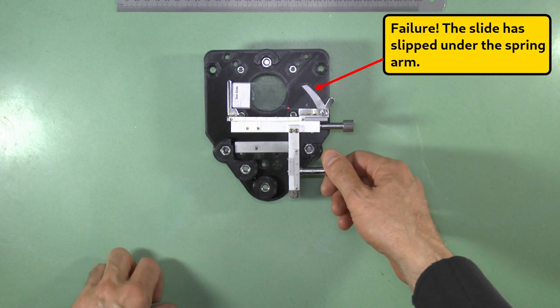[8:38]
One other adjustment you may need to make for both types of slide holder is to ensure the spring arm and straight arm both lie flat with respect to the stage. These holders work by holding the slide off the stage slightly by gripping the slide between the two arms. However, this won't work if the arms are not parallel to the stage and close to it.
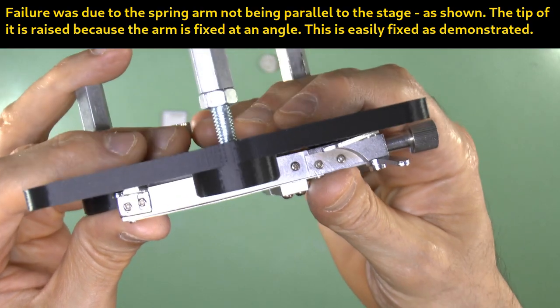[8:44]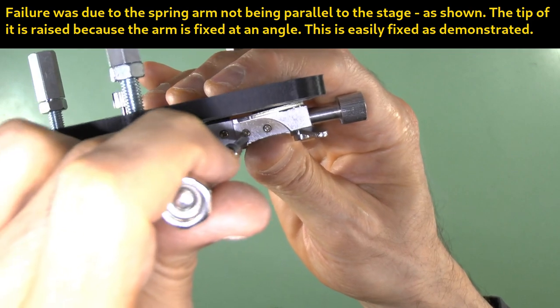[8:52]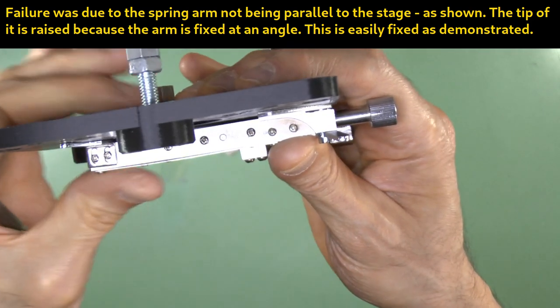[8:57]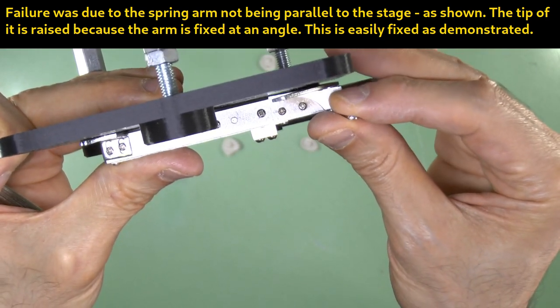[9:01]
You can effect adjustment of this using these two screws for each arm. For example, here I show how the spring arm position can be altered using these screws. The same type of adjustment can be done for the straight arm.
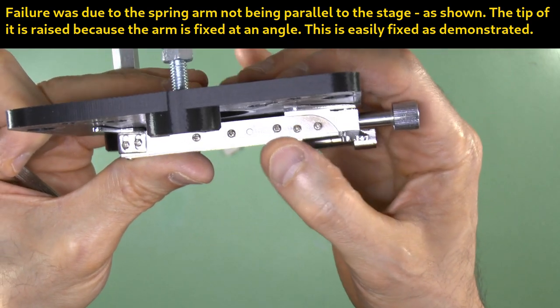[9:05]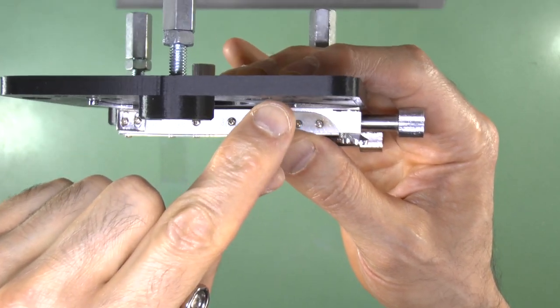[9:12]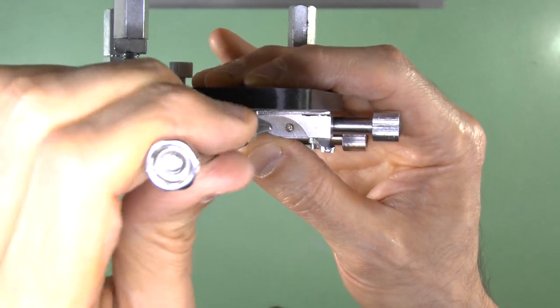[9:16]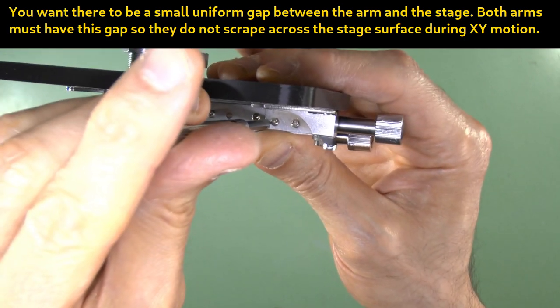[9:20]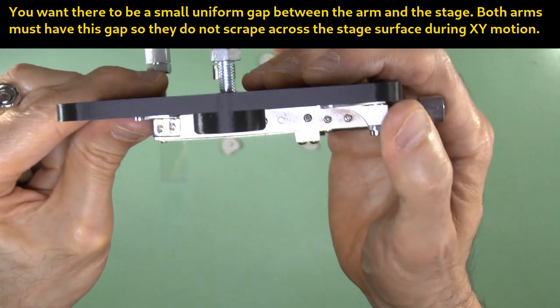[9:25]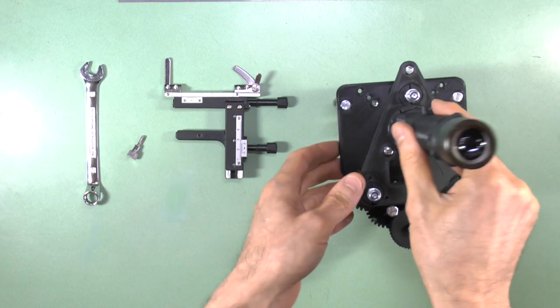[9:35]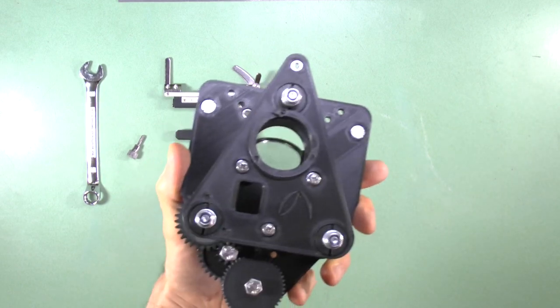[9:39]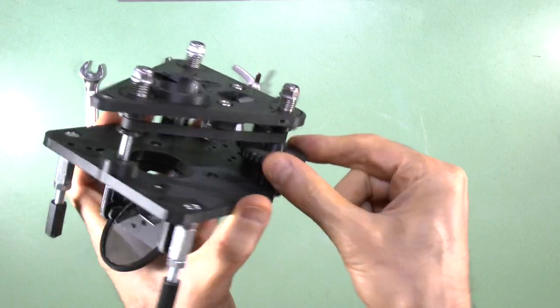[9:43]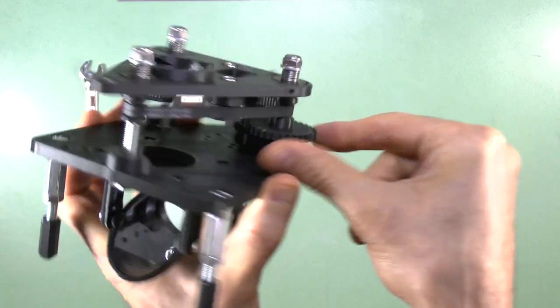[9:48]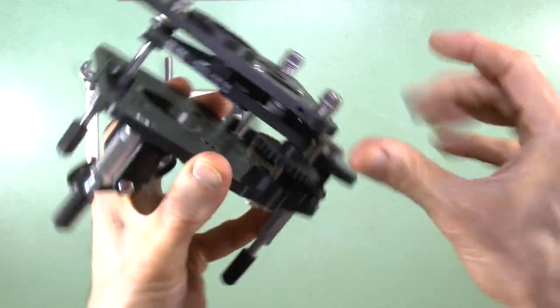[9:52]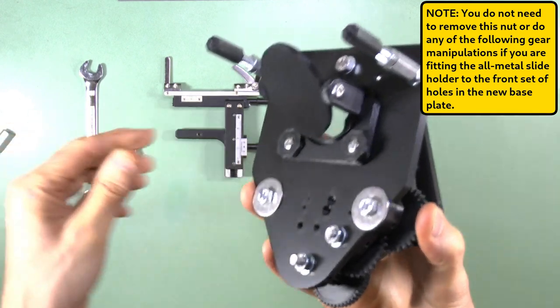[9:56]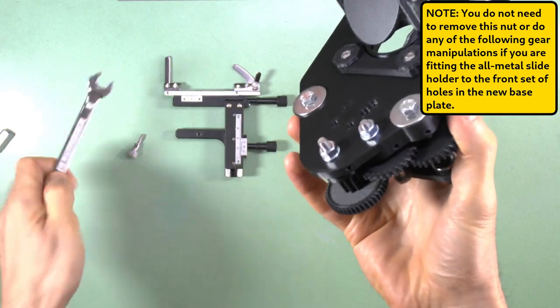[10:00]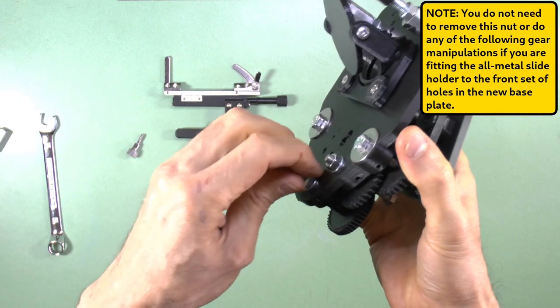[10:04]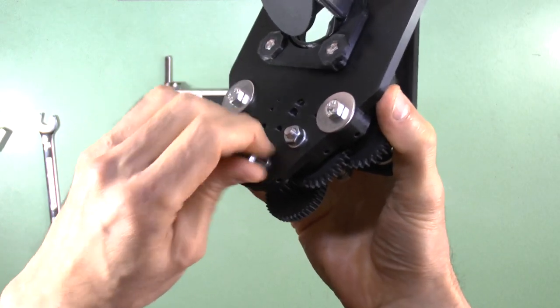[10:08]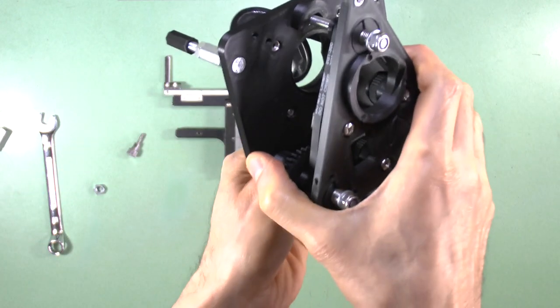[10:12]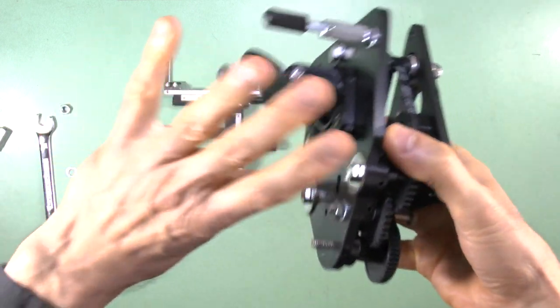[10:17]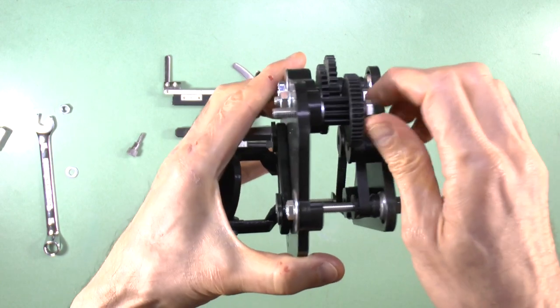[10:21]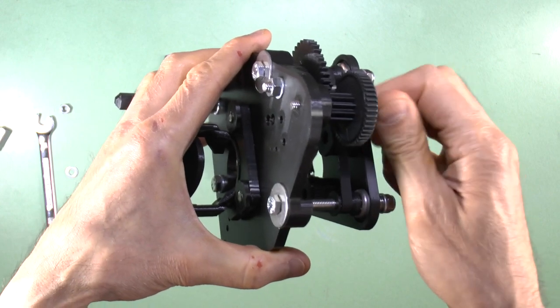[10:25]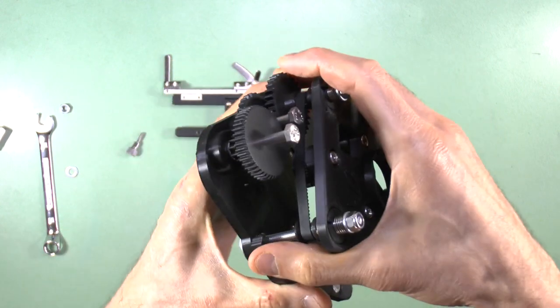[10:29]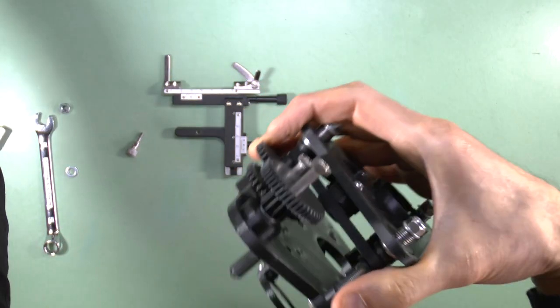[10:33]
To fit your modified slide holder to an assembled PUMA microscope, do the following, as illustrated. Raise the stage fully till just before the springs fold in on themselves. Remove the fine gear nut and washer on the underside of the stage. Unscrew the fine gear bolt upwards till the end of the bolt is flush with the underside of the base plate. Remove the PTFE spacer ferrule from the top of the fine gear axle if one has been fitted.
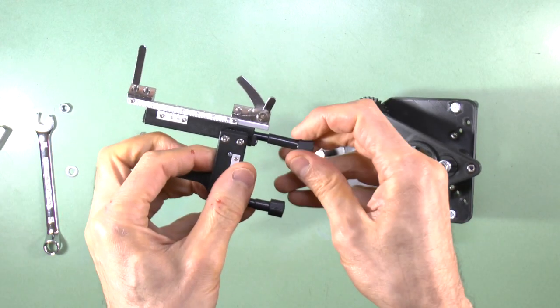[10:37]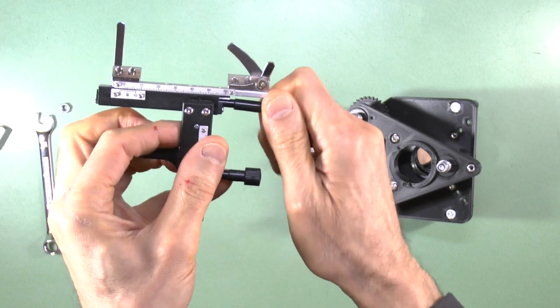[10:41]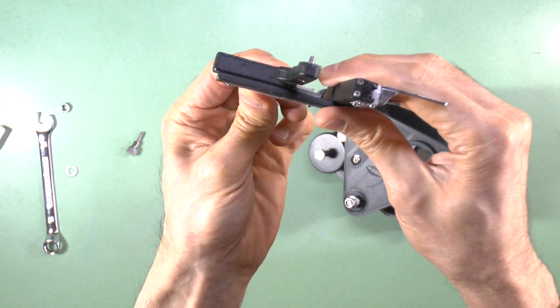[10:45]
Position the slide holder arms thus. Retract the X arm as far as it will go towards the X control knob, and position the Y arm so the moving part of the Y mechanism is level with the fixed part at the rear.
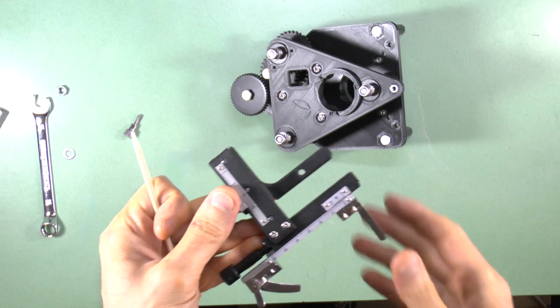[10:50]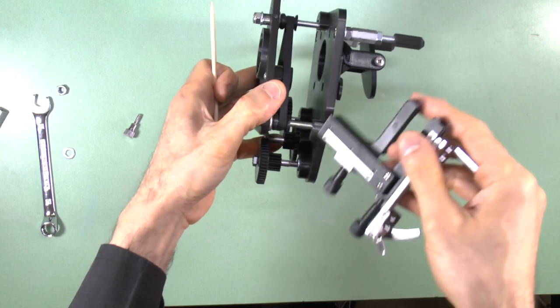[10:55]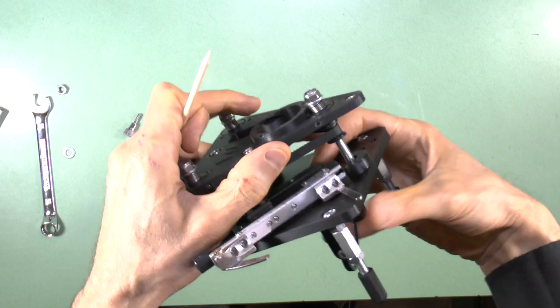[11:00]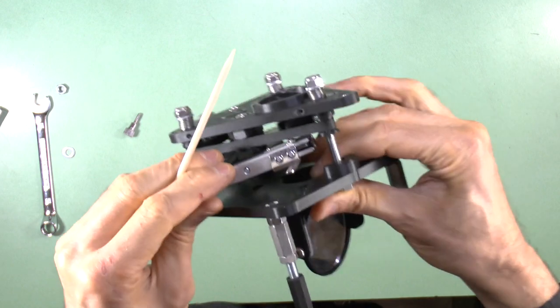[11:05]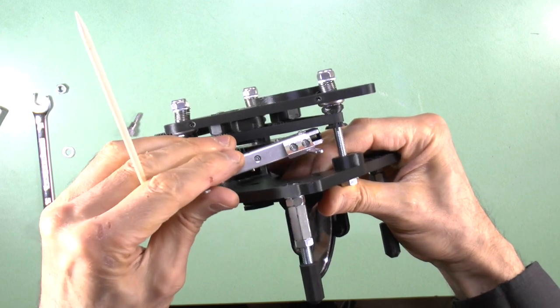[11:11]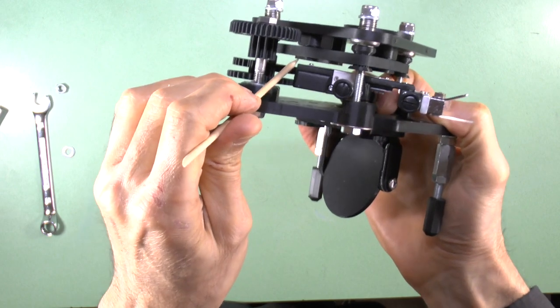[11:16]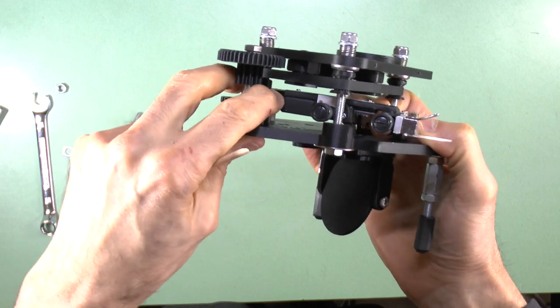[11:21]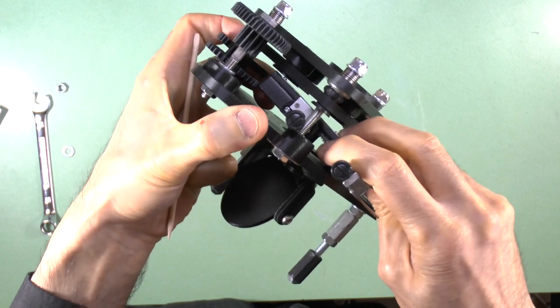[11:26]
Hook the Y control of the slide holder around the XY focus post of the microscope and pivot the whole slide holder around this post so the straight arm of the slide holder goes past the front focus post. To do this, the end of the X boom must be above the level of the front focus post riser, and the rear part of the Y mechanism must be maneuvered between the underside of the back belt tensioner and the top of the intermediate gear. So ensure the intermediate gear is positioned down as low as it can go on its axle.
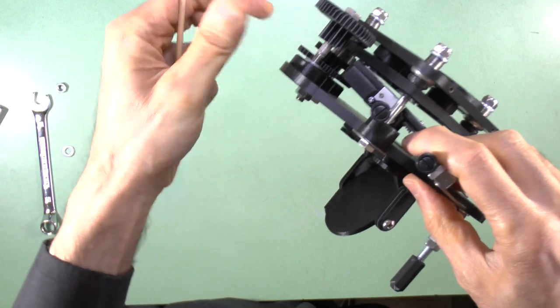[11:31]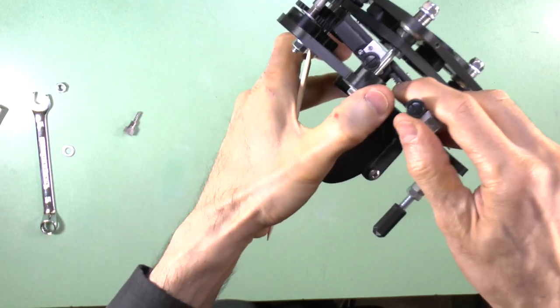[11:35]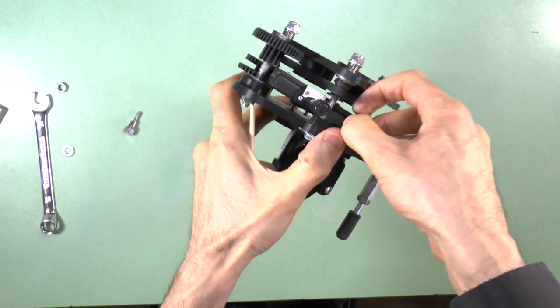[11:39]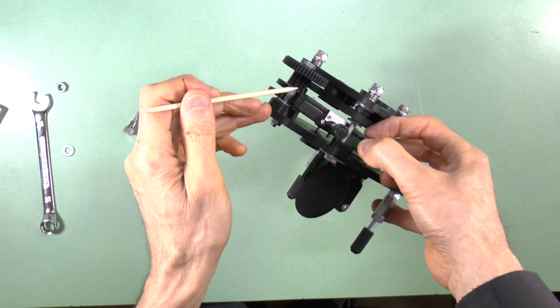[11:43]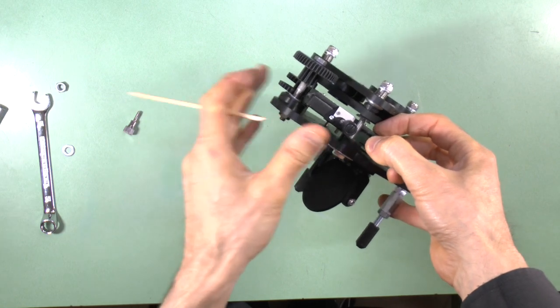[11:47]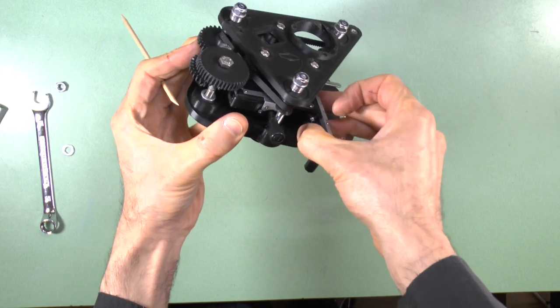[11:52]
Now, with the fine gear raised as high as it can go on its axle, complete the hook around maneuver by passing the rear of the Y mechanism of the slide holder between the underside of the small part of the fine gear and the top of the rear focus post riser. The Y control stick of the slide holder must be touching the XY post of the microscope at all times during this maneuver.
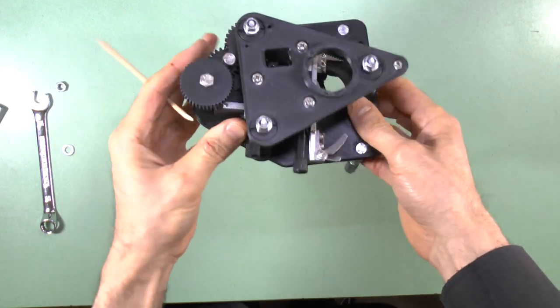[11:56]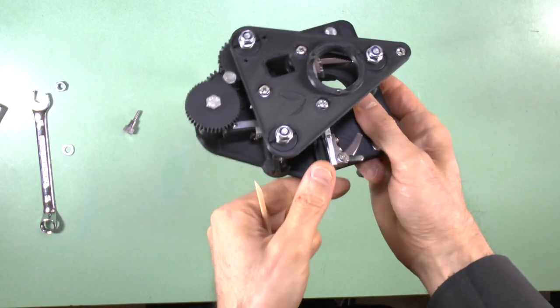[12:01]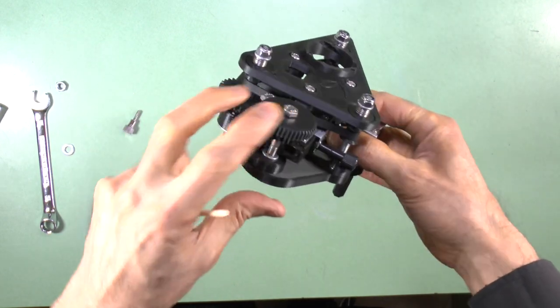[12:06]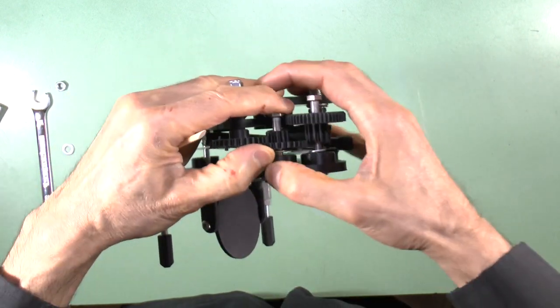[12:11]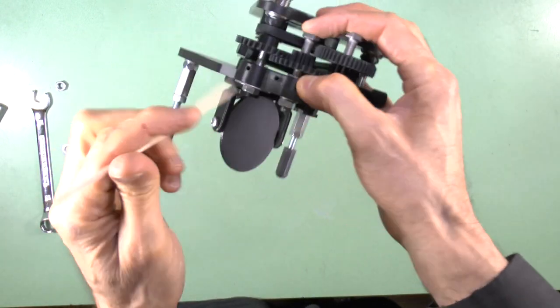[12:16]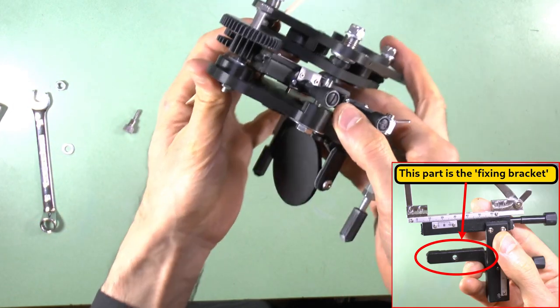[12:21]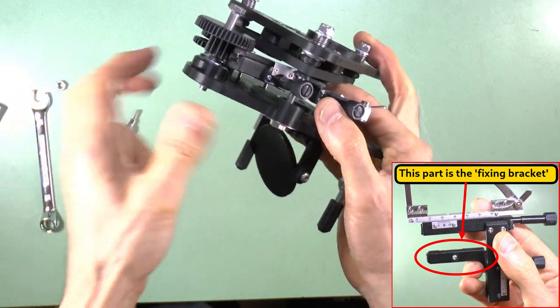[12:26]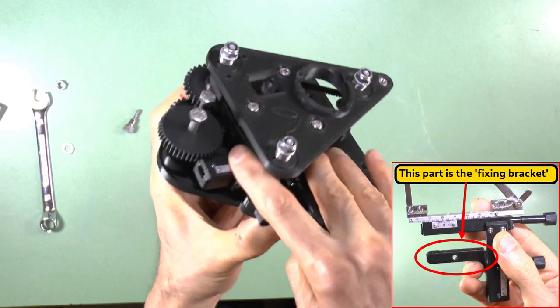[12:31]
Once the straight arm of the slide holder is past the front focus post, straighten up the slide holder to its normal position. Release the fine gear so it falls back down, and raise the intermediate gear on its axle as far as it will go before being stopped by the coarse gear. This provides room for the fixing bracket of the slide holder to be positioned backwards into the recess for it in the stage, so its pins can be lined up with the holes for them. Now lower the fixing bracket till its pins are fully inserted into their holes.
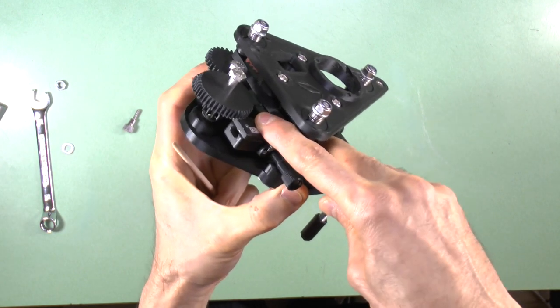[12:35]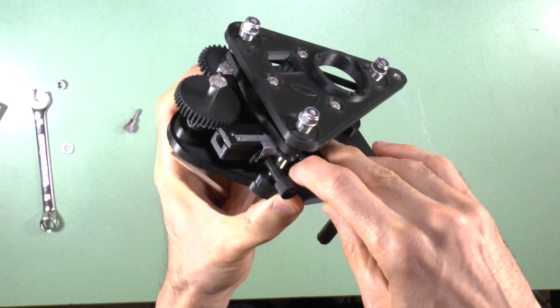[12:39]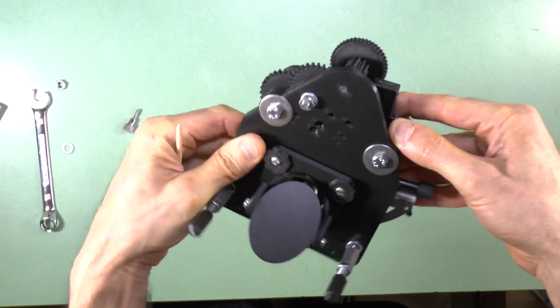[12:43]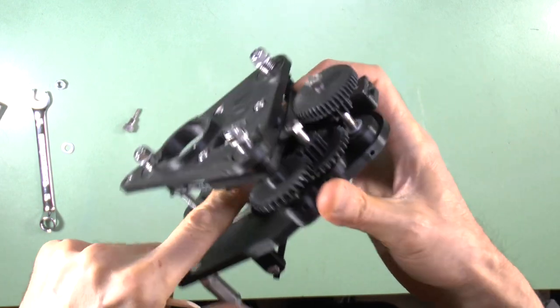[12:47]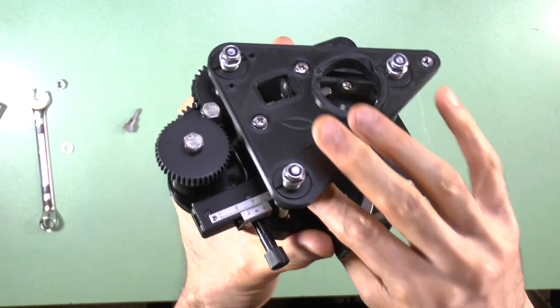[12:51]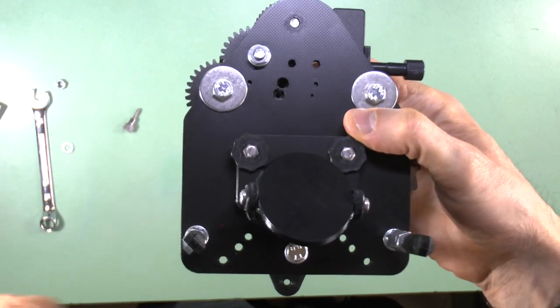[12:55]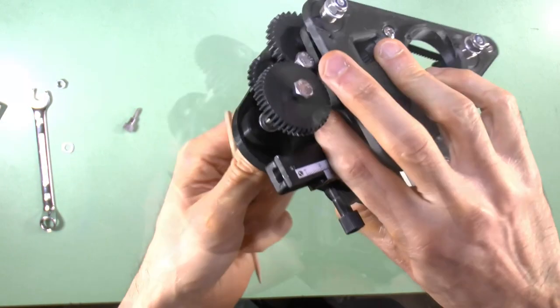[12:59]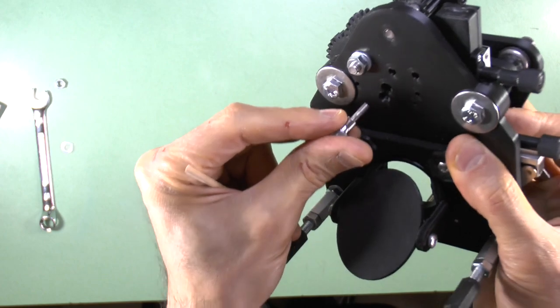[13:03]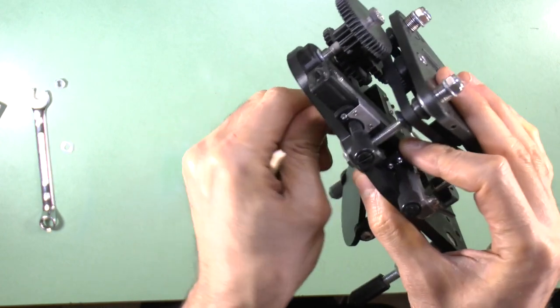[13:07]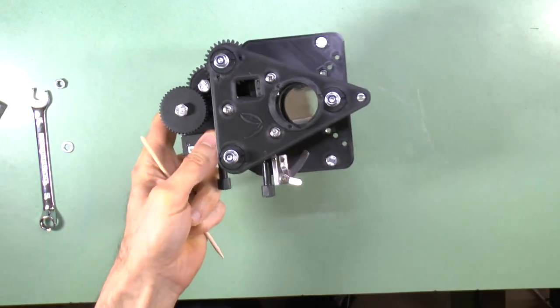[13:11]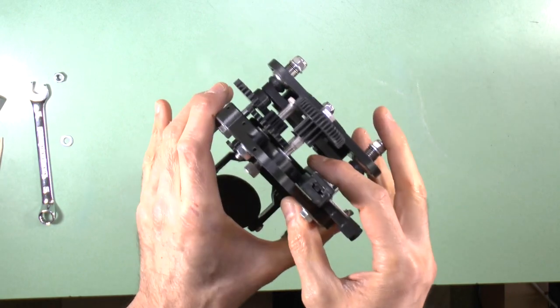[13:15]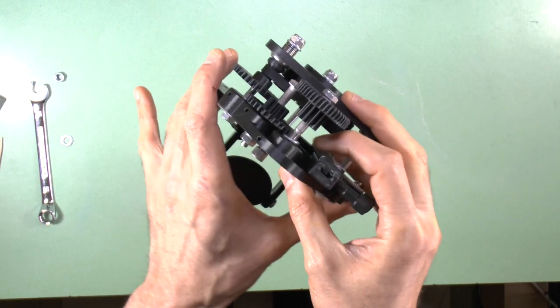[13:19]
Fix the slide holder in place with its fixing screw inserted from the underside of the base plate and tighten it. If you're using the all-metal slide holder, or if you have no intention of fitting the XY stabilizer, you can now lower the intermediate gear back down and retighten the fine gear post back to its normal position.
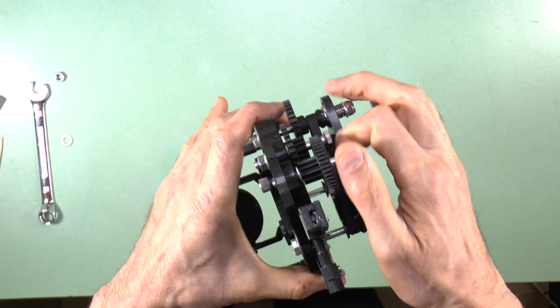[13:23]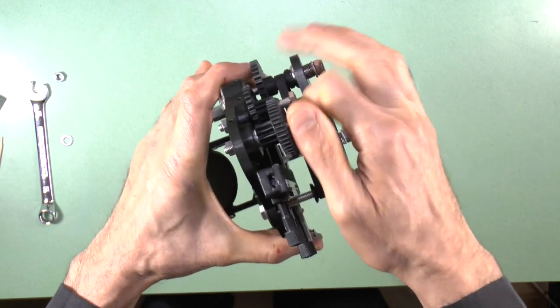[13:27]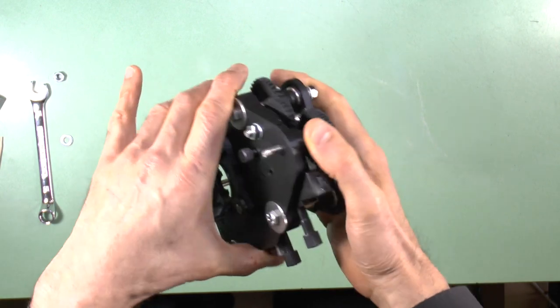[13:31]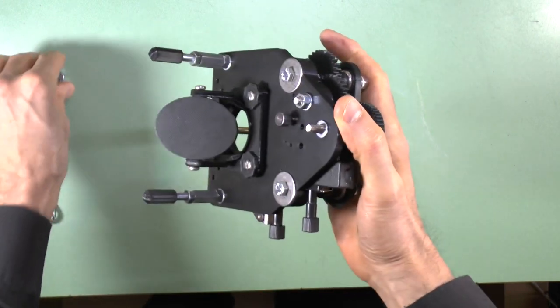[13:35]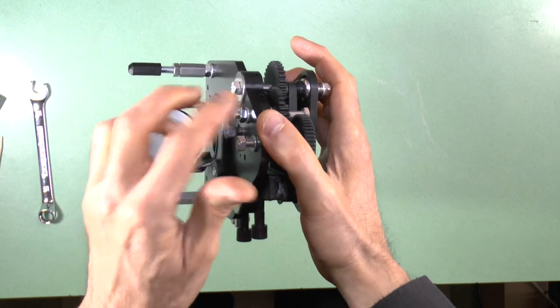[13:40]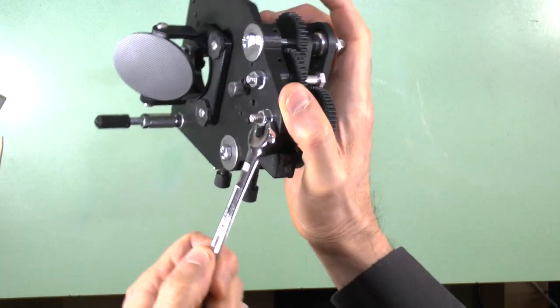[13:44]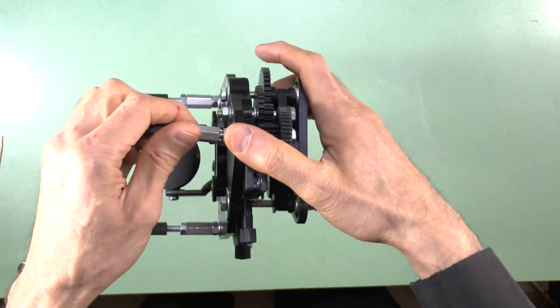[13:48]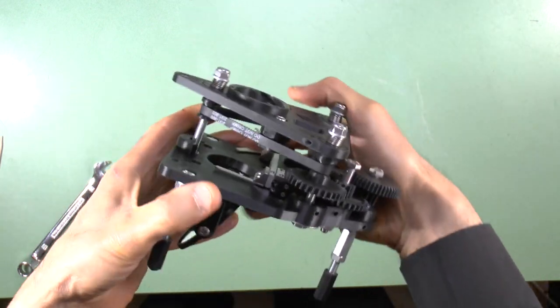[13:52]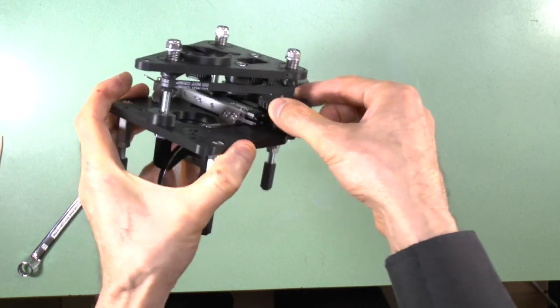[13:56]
Then reattach the rear washer and nut and leg on the underside of the base plate, and lower the stage back to a normal use position. If there was a PTFE ferrule on the top of the fine gear, reattach it now.
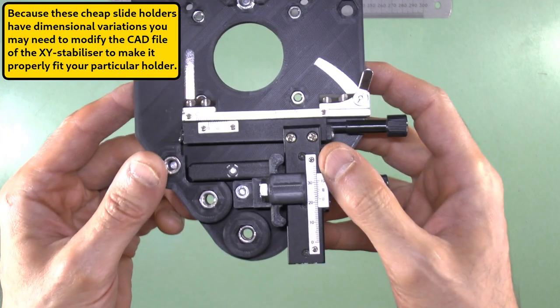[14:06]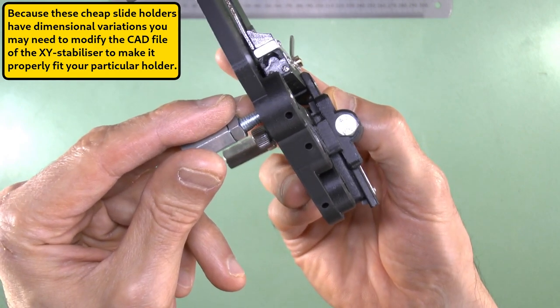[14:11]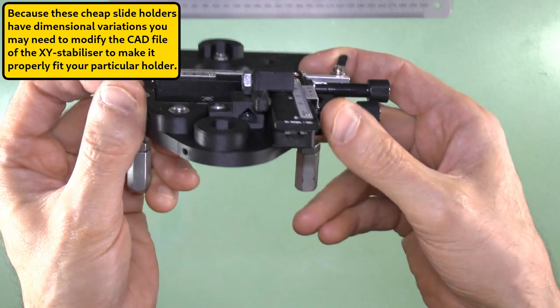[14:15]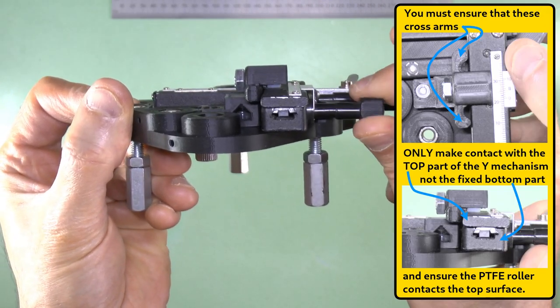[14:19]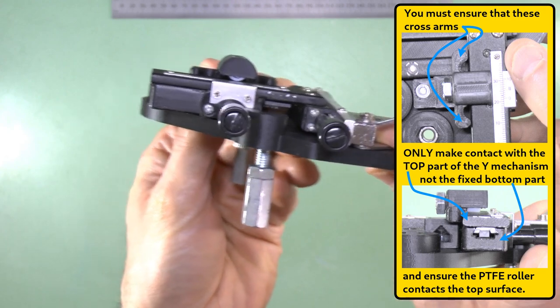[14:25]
For the cheaper slide holder, you may want to add the XY stabilizer to limit the amount of X boom lift that occurs when handling the X control. This is not a problem with all these models, and the XY stabilizer has issues of its own and can damage the gears if fixed too tightly, so you should not fit the XY stabilizer unless it is really needed.
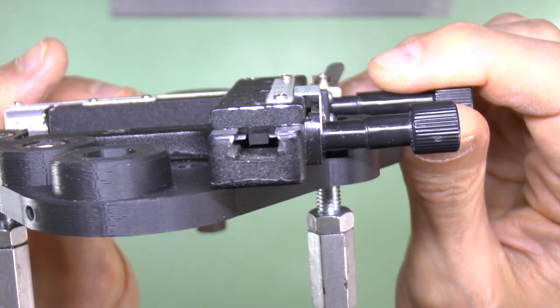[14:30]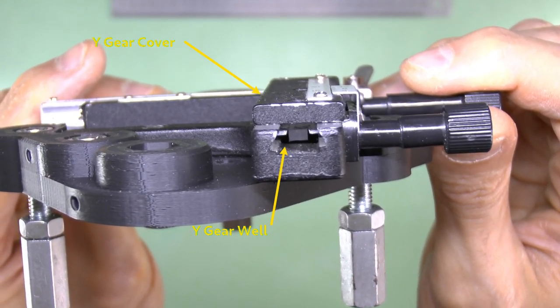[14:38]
This lift happens because the cover of the Y control mechanism in some units has play in it, which allows it to rock back and forth on the Y control gear well, as shown. These are the parts and the tools you'll need to make the XY stabilizer. Details are given in the video description.
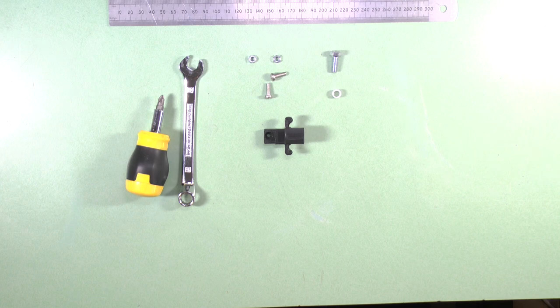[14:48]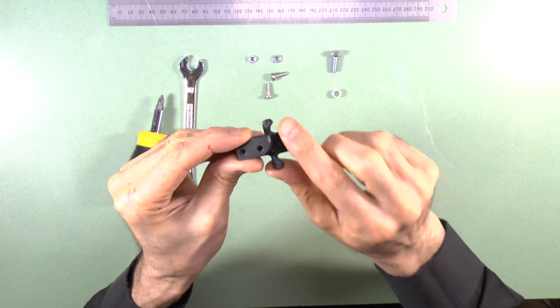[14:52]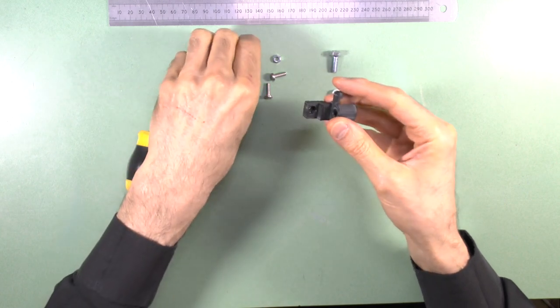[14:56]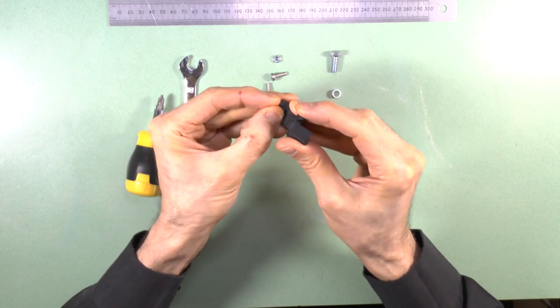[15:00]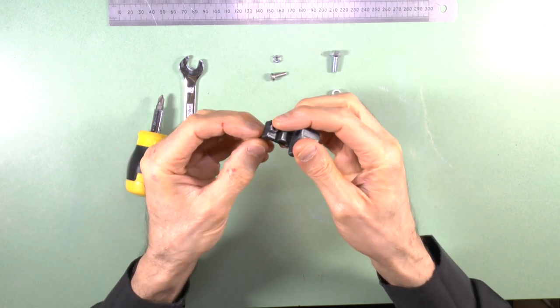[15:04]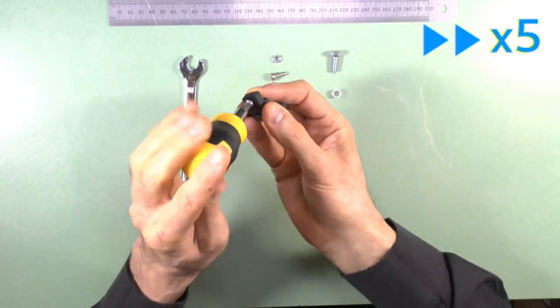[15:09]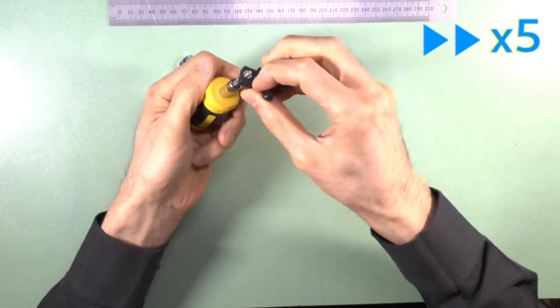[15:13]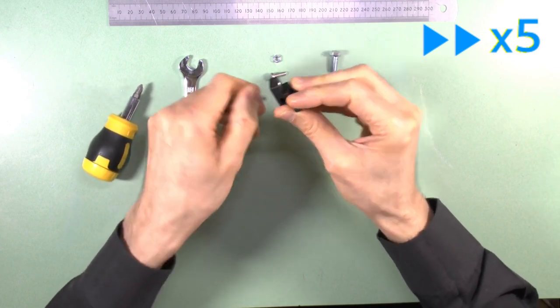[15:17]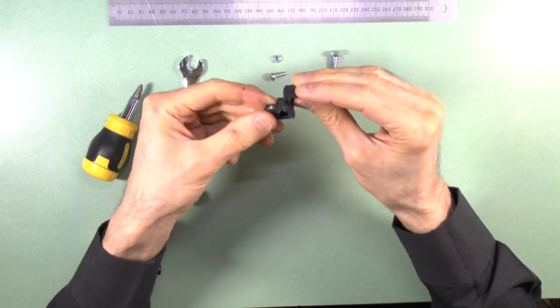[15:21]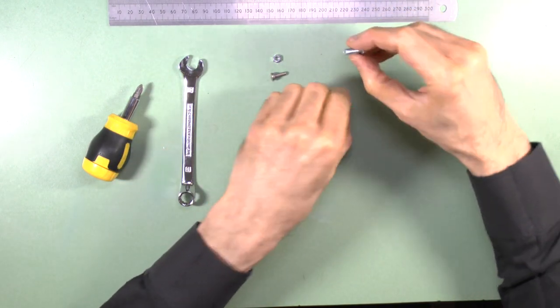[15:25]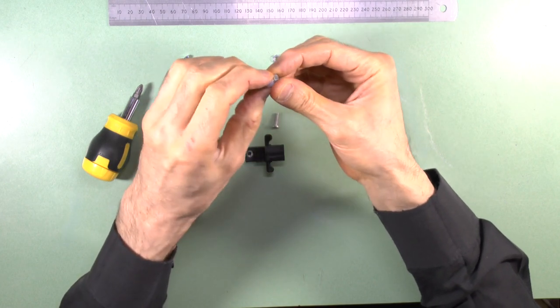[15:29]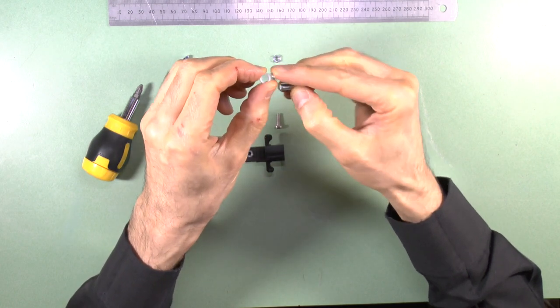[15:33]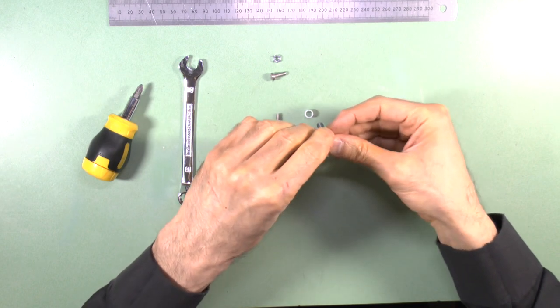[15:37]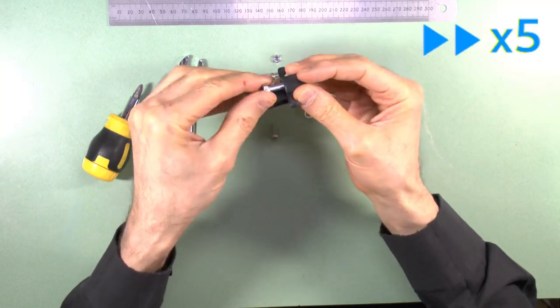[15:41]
After printing the stabilizer, remove the supports and clean it up from any stray plastic, as usual. Insert an M4 nut 3mm thick into the hexagonal socket for it here. Check that the PTFE ferrule rolls freely on the M6 bolt. If not, then increase the size of the PTFE tube aperture with a 6mm drill, taking appropriate safety precautions, similar to what was described for the focus post ferrules in the video on Z-Stage 2 troubleshooting.
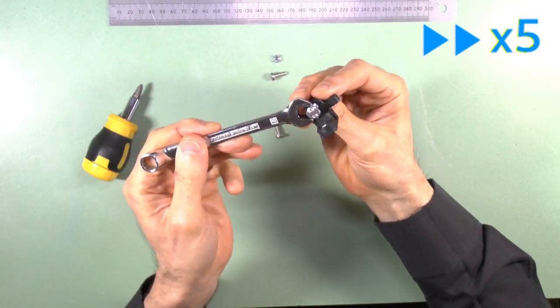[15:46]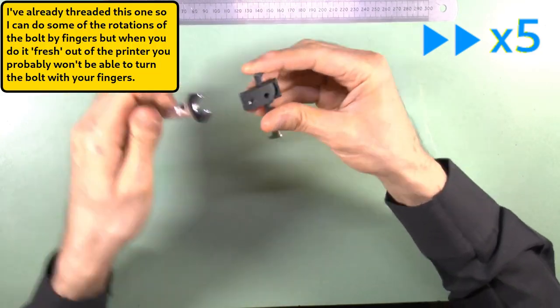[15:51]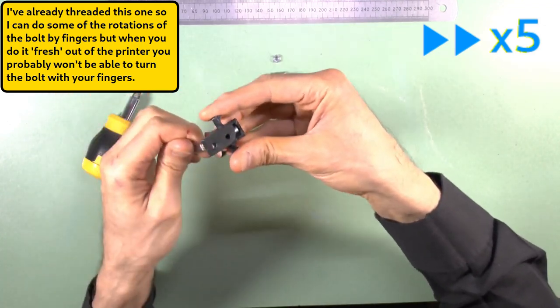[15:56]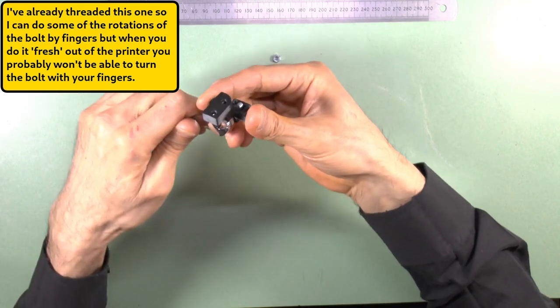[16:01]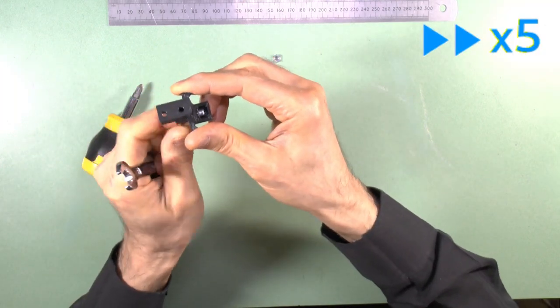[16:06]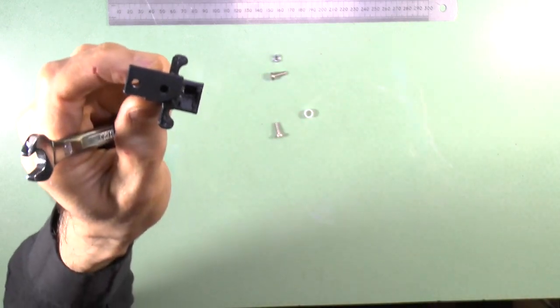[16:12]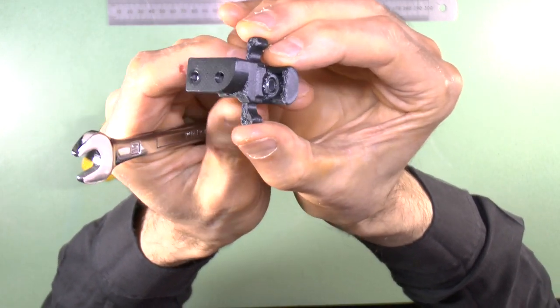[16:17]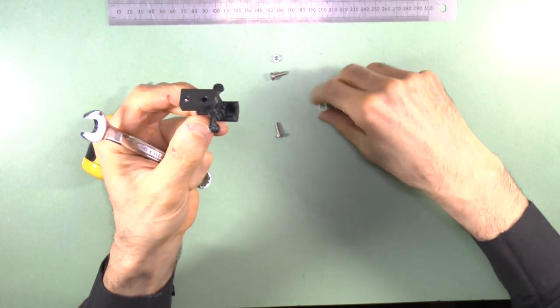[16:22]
Thread the 16mm long M6 bolt into its hole. You will be cutting the thread into the plastic as you do this. Thread it all the way in, then thread it back until the end of the bolt is flush with the internal surface of the recess for the ferrule. Insert the ferrule into the recess and re-tighten the bolt to keep the ferrule in place.
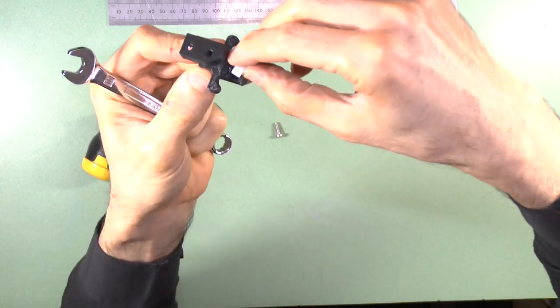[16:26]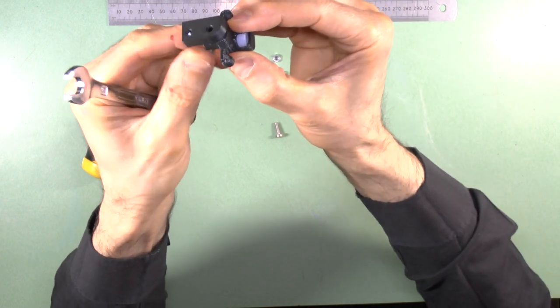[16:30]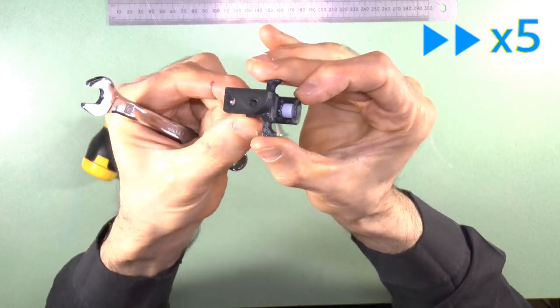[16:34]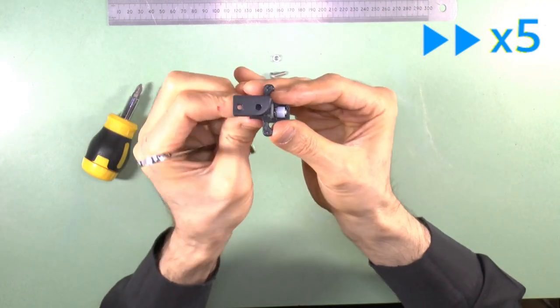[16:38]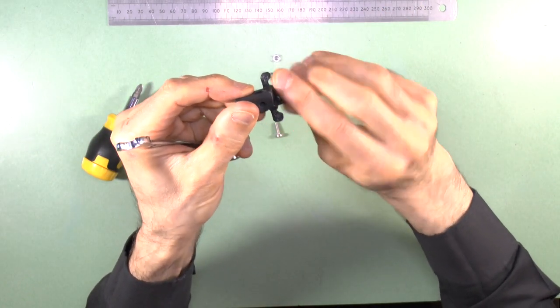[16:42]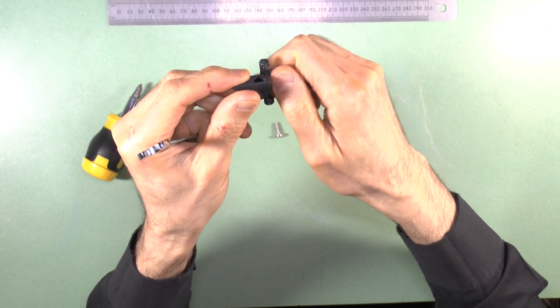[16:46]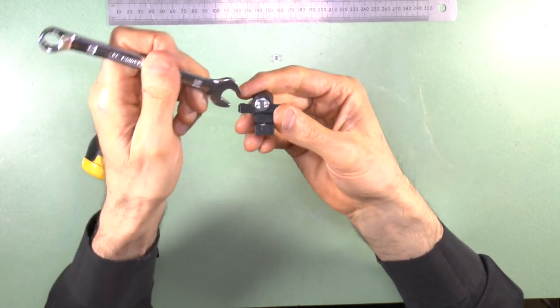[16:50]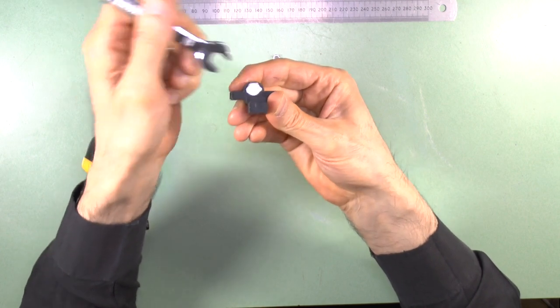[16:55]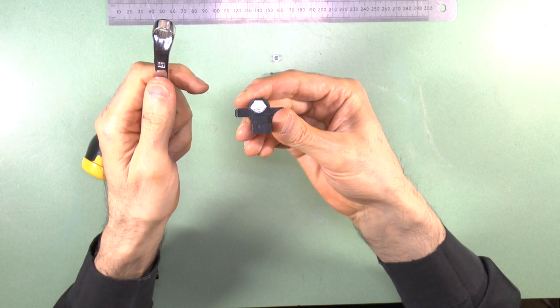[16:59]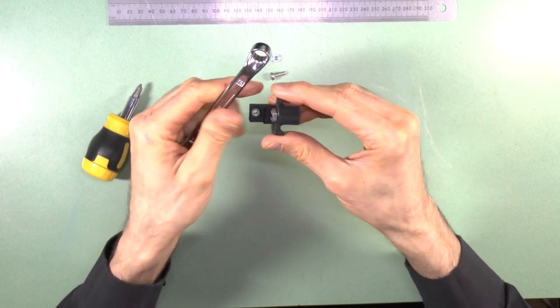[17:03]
Check that the ferrule rolls freely on the bolt. If it doesn't, you may need to make some adjustments to the print to allow it to roll freely, depending on what's stopping it. Finally, be sure to turn the M6 bolt so that its hexagonal head rests in the orientation shown. Otherwise, it will interfere with the motion of the microscope fine focus gear.
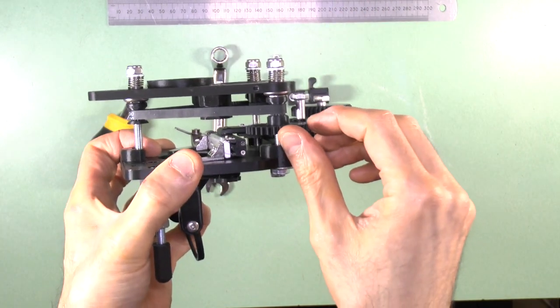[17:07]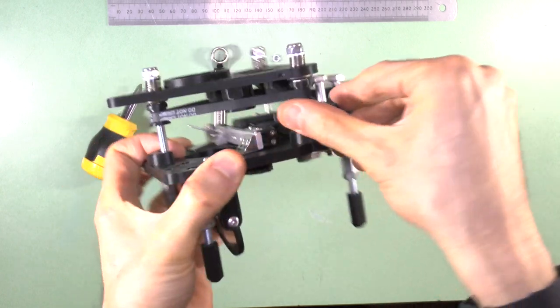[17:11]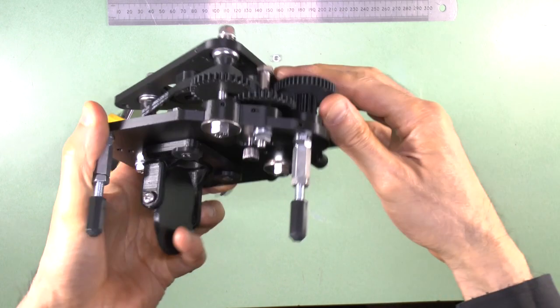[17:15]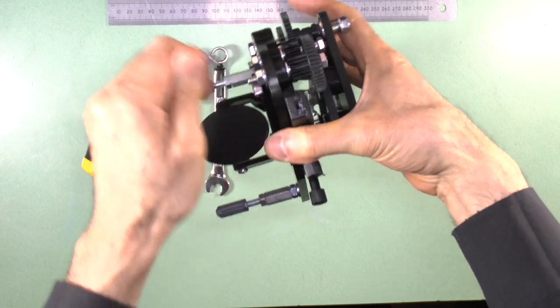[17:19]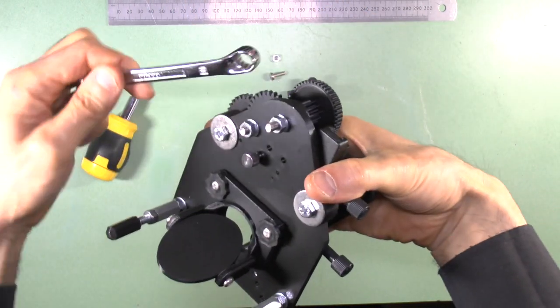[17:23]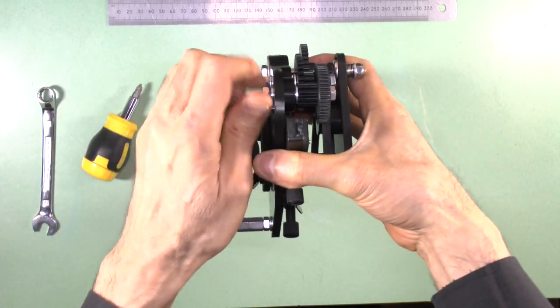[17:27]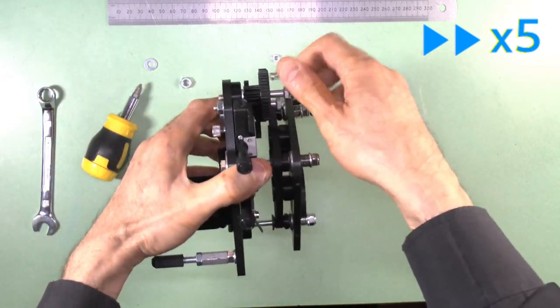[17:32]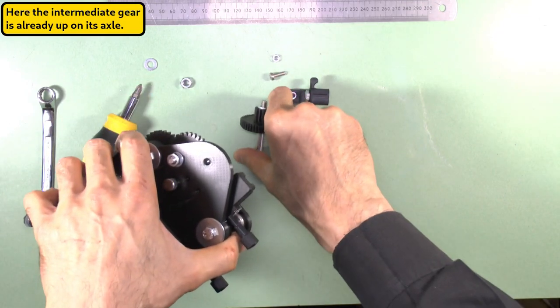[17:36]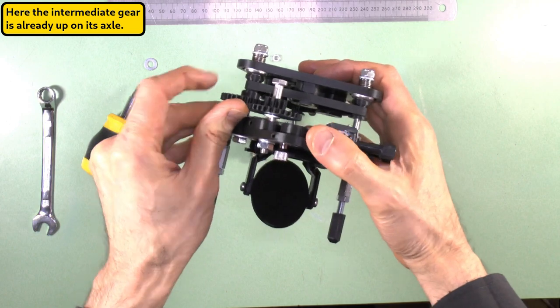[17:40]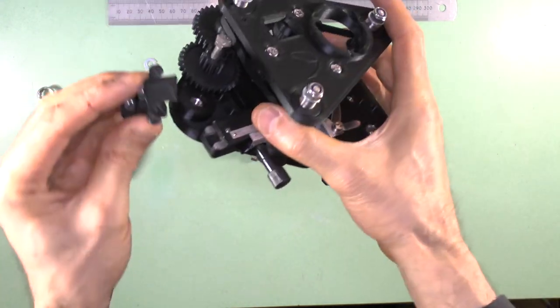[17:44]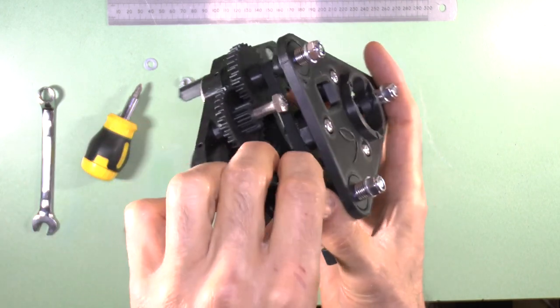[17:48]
Now, with the stage raised to its highest limit before the springs fold in on themselves, remove the fine gear and its axle bolt completely. And raise the intermediate gear on its axle till it contacts the coarse gear. Slip in the XY stabiliser and lower the intermediate gear back to its normal position.
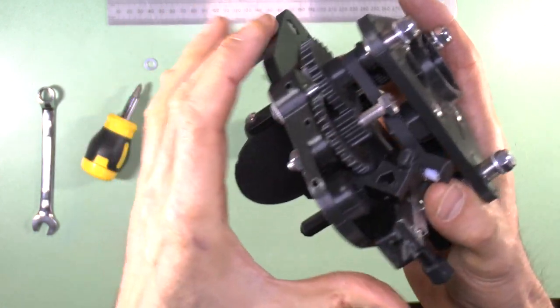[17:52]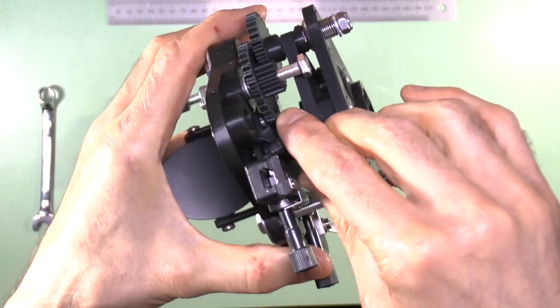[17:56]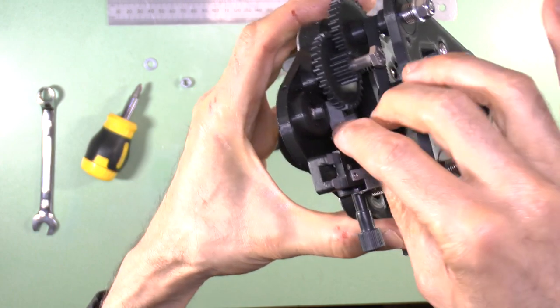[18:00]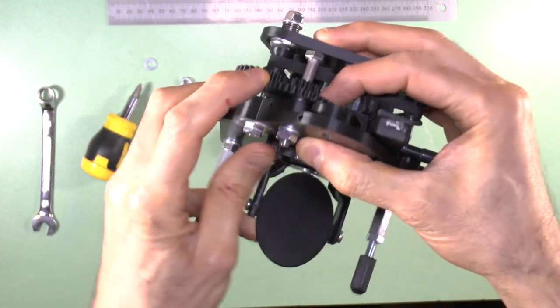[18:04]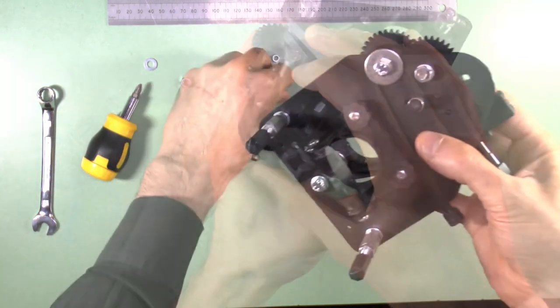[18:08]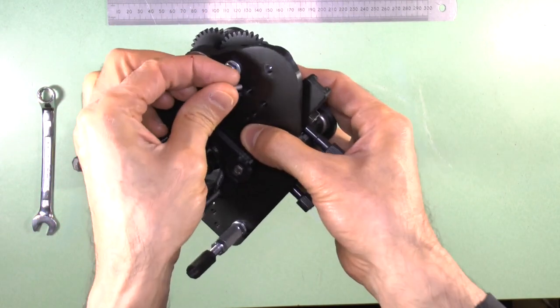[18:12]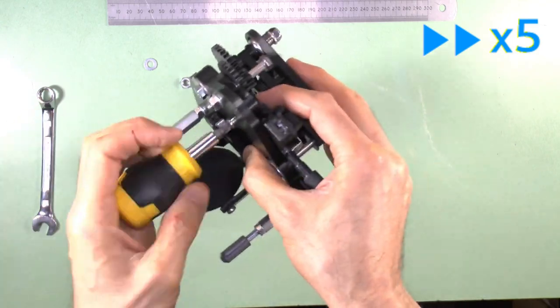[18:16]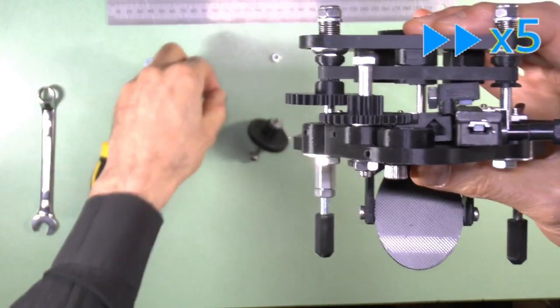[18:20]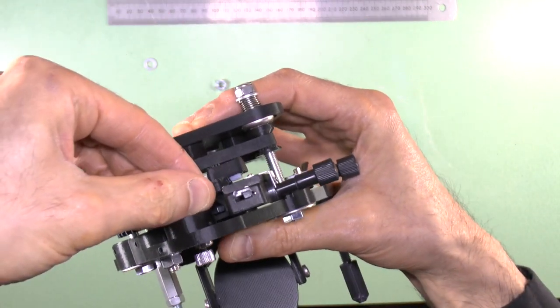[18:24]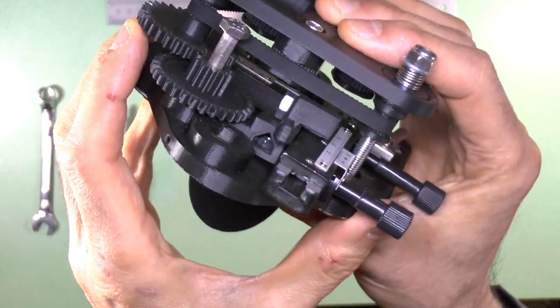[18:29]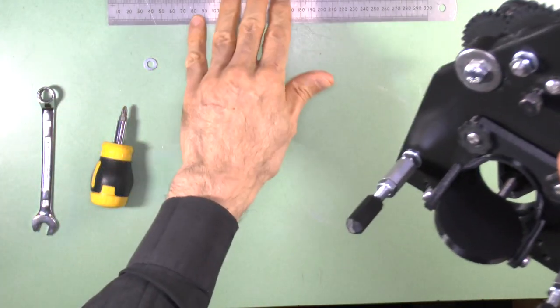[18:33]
Insert a 12mm long M4 screw from the underside of the base plate into the M4 nut that is in the stabilizer, but do not tighten it fully. Now drop another 3mm thick M4 nut into the housing for it in the stabilizer as shown, and insert another M4 screw from the underside of the base plate into that nut, but do not tighten it fully.
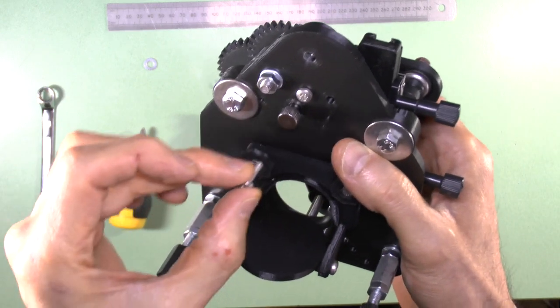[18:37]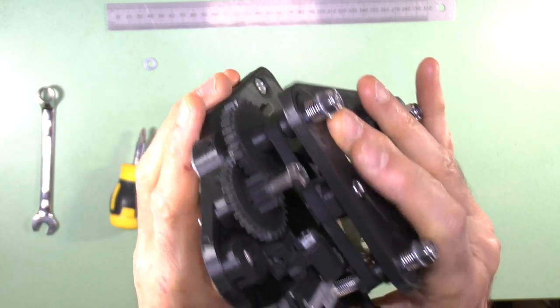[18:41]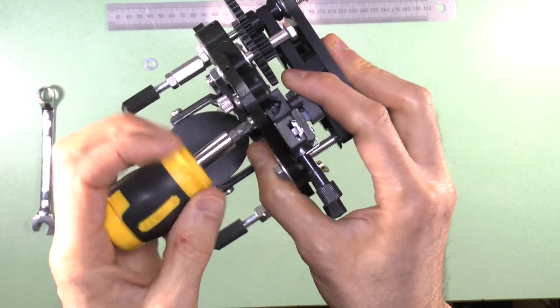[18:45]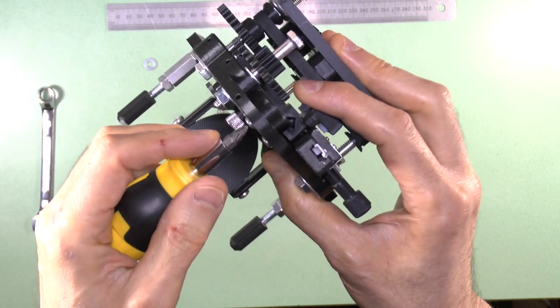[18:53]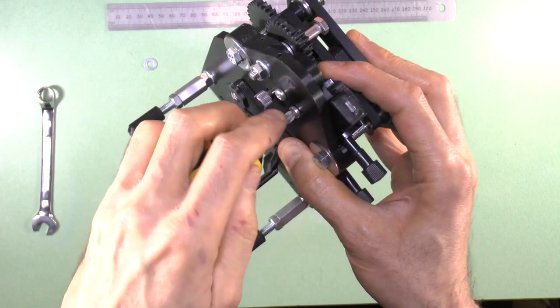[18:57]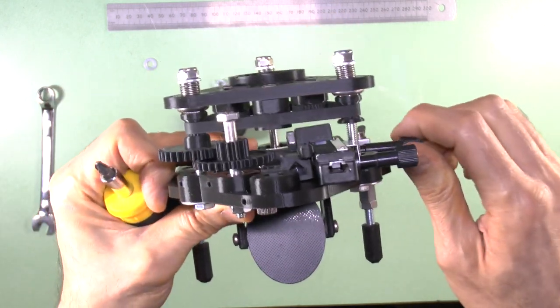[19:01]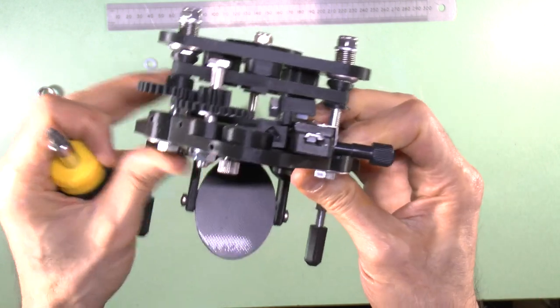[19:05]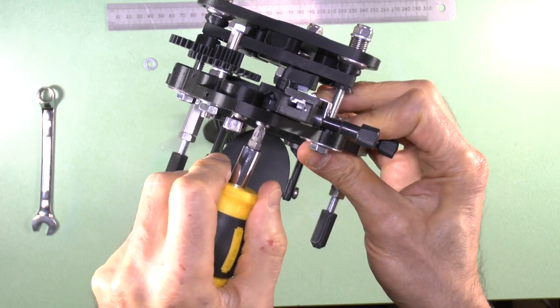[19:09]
Carefully adjust the tightness of both M4 screws so that you minimize lift of the X boom during turning of the X control, while at the same time not causing too much drag on the Y control motion. Be careful not to over-tighten the screws, or you could snap teeth in the Y axis gear due to too much resistance to Y motion.
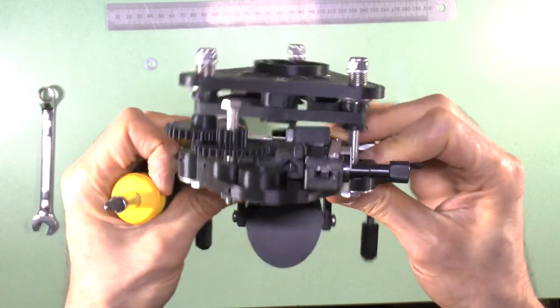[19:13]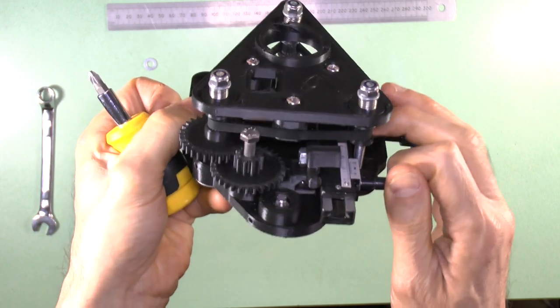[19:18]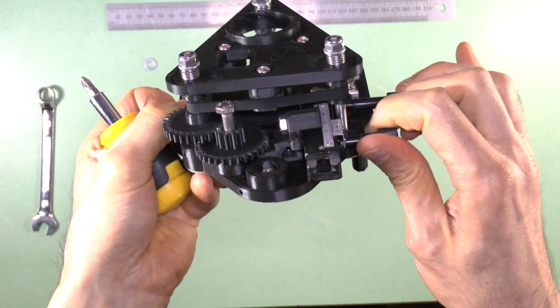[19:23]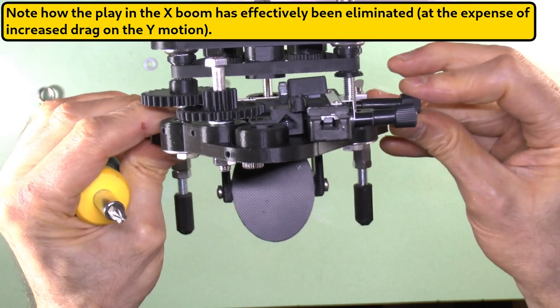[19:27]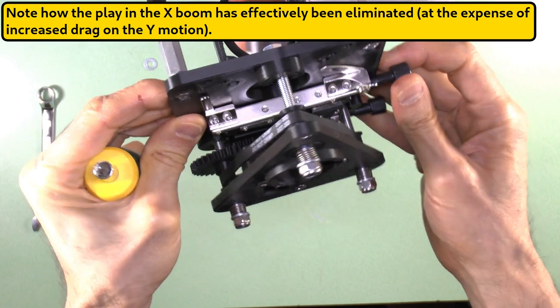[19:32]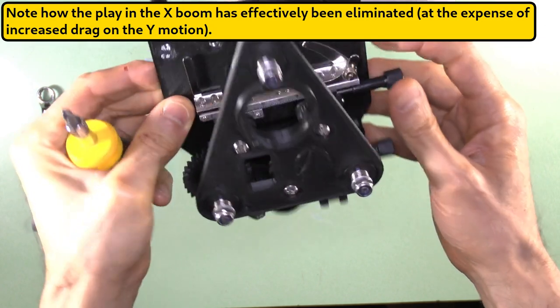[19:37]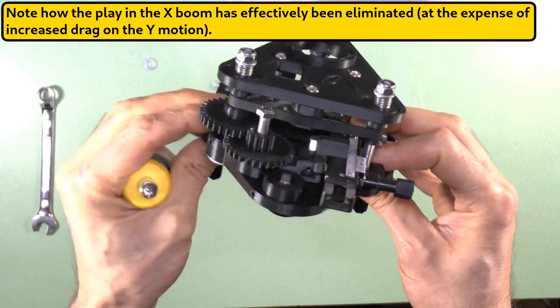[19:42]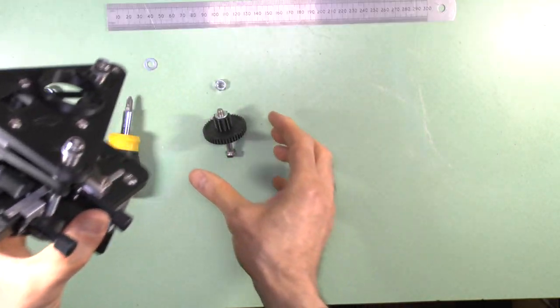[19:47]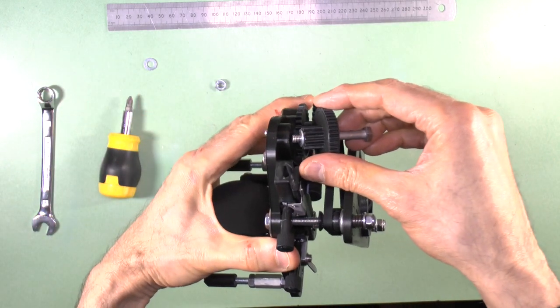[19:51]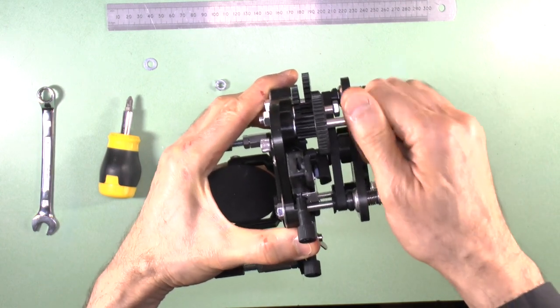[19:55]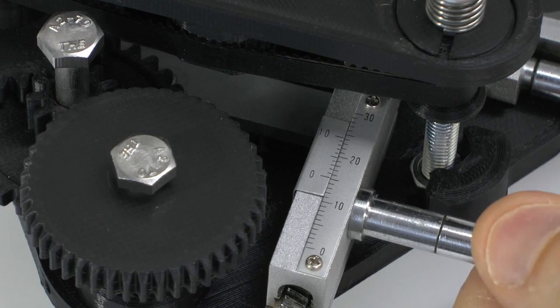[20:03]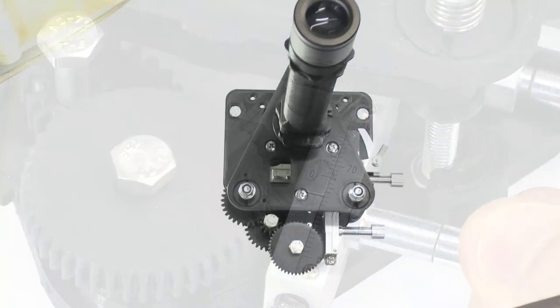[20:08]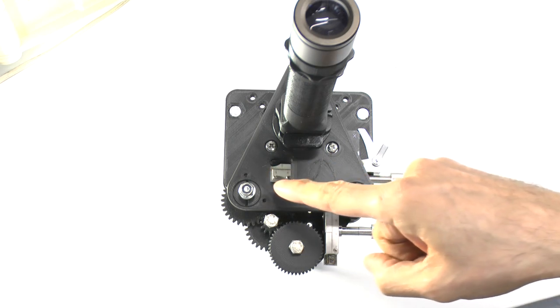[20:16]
You can now reinsert the fine gear with its washer and axle bolt, reattach the rear leg and lower the stage back to a normal position. Use of the vernier scales to measure distances to 0.1mm accuracy is described in many tutorials, so I won't repeat that here. However, I'll take this opportunity to mention that this rectangular window in the focus platform was originally designed
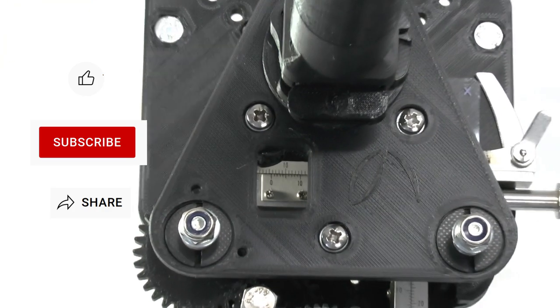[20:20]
here to allow you to read the vernier scale on the X-axis, because otherwise all the focusing mechanism of the PUMA scope will make it difficult to see. Your upgrade to a mechanical XY slide holder is now complete and ready to use.
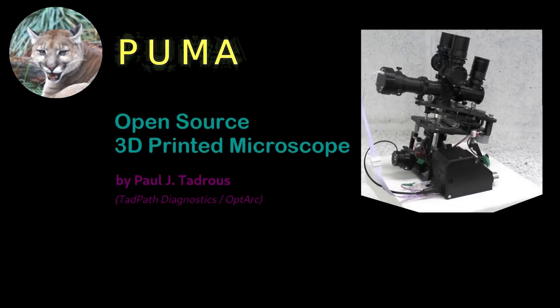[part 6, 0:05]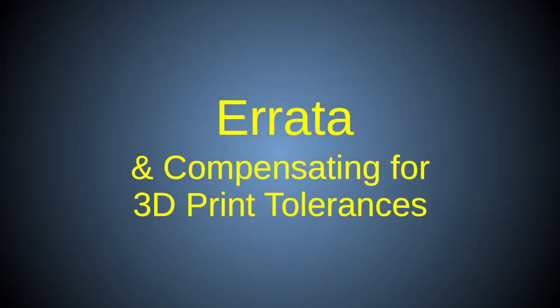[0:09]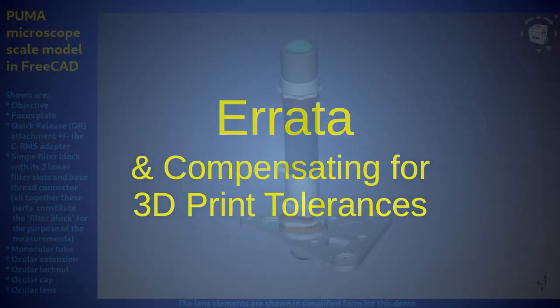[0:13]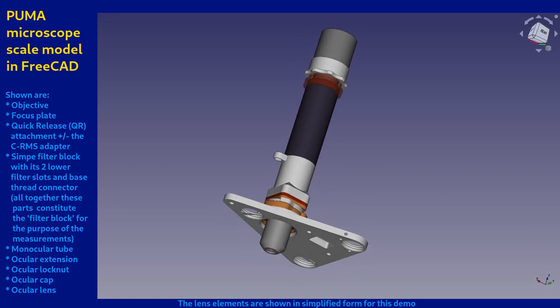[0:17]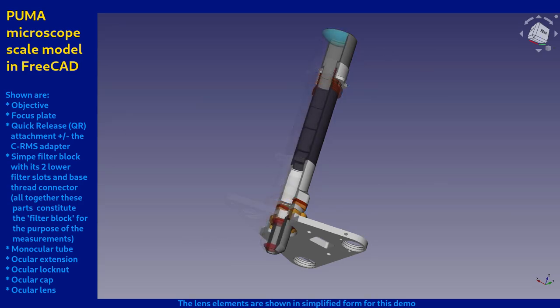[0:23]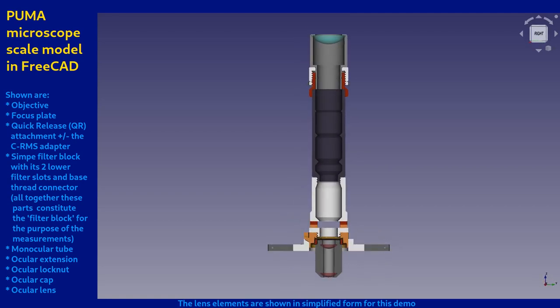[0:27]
In this video, I'll explain an error I made in the PUMA design, which I have since corrected, and I'll correct some demonstration errors in my earlier videos. I'll also explain how to deal in general with errors in the optical path lengths that may occur due to practical 3D printing issues, so you'll know how to get the best optical performance from your PUMA microscope.
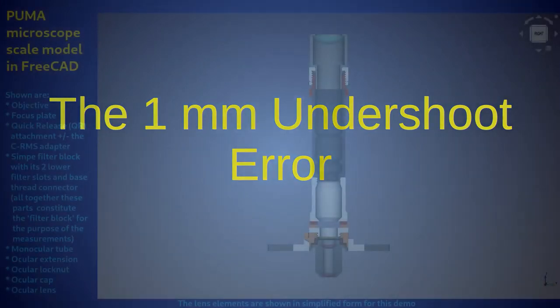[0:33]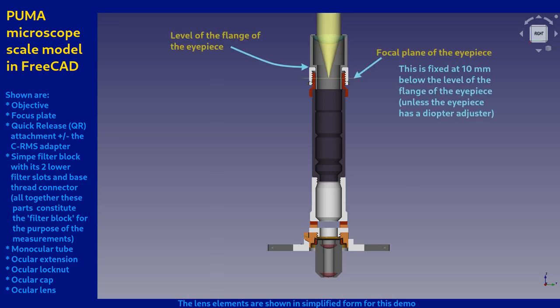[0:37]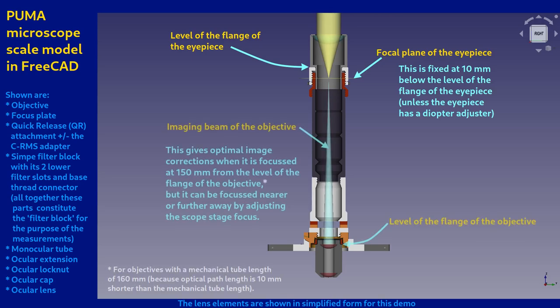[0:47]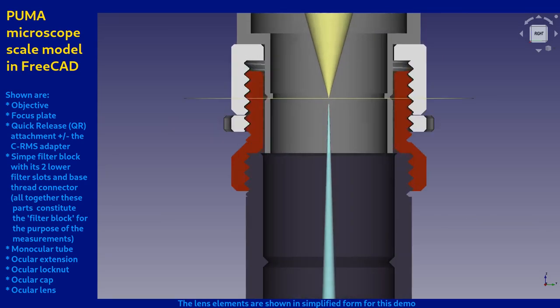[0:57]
While reviewing the PUMA CAD models, I realized that the design I was using for all the ocular head configurations above the filter block caused the focal plane of the eyepiece to be placed 1 mm above where it optimally ought to be. Another way of saying this is that the optimal focus plane of the image from the objective is 1 mm below the ocular's focal plane. This is illustrated in the figure.
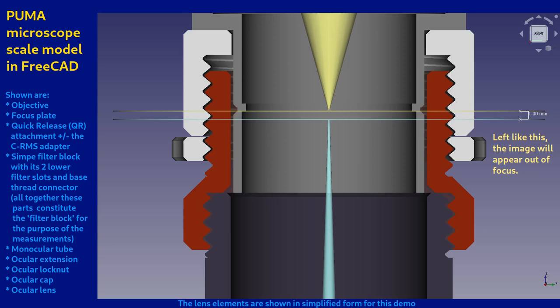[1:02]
You can still easily focus an image of the specimen onto this ocular focal plane by focusing the stage, but then the focused image will not be the best quality you can get from your objective. The effects of this will be a minor loss of planarity and chromatic correction in the focused image. There will also be some loss of parfocality when changing objectives. In most practical cases, these effects will be very slight and probably not noticeable. Also, the 3D printing process itself may partially compensate for this error, as I'll explain later.
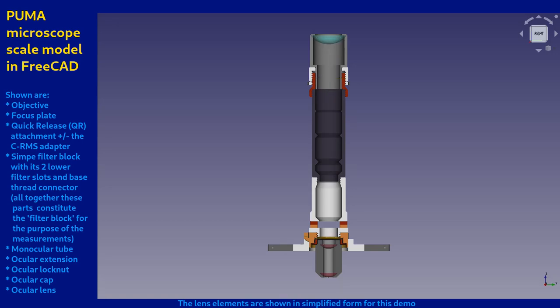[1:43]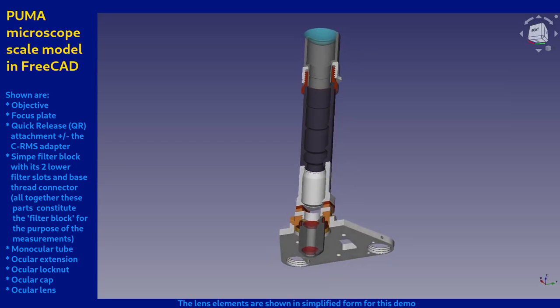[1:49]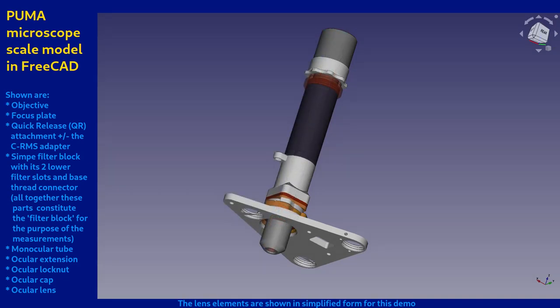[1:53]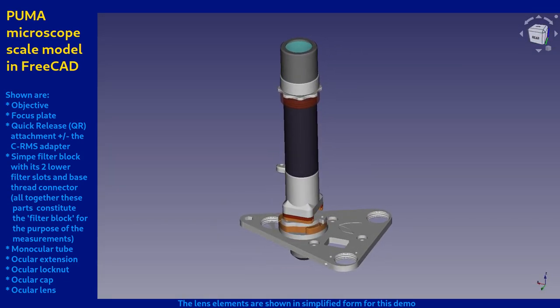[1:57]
However, for accurate scientific documentation, and to give you the knowledge you need to get the best optical performance from a PUMA scope, I made this video to describe the error and to explain how I corrected it in the current PUMA design. I'll also describe how you can correct for it if you have an older PUMA scope, and fortunately, it is very easy to correct. Note that this error only affected ocular attachments above the filter block. It did not affect the trinocular port.
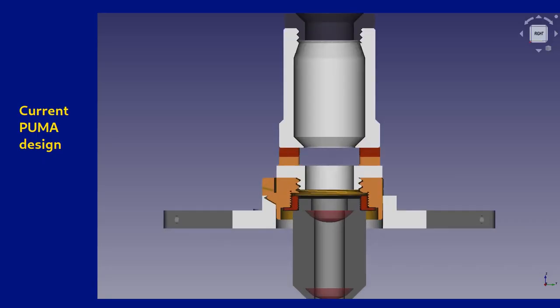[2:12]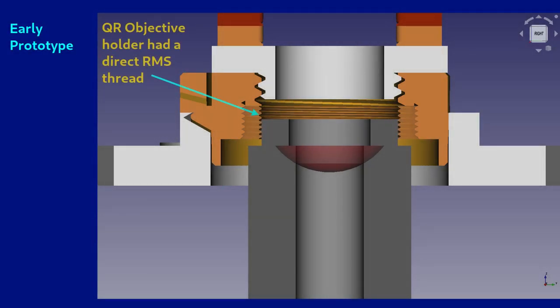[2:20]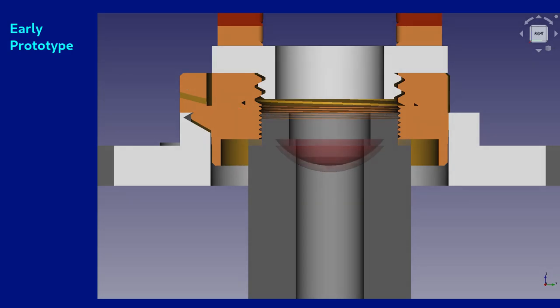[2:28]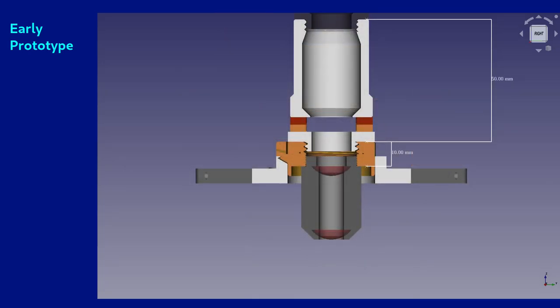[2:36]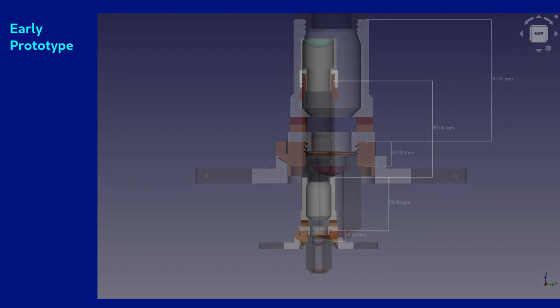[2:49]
This 1 mm undershoot error is due to the use of the C to RMS adapter in the quick-release objective holder. In the early prototypes of PUMA, I did not use a C-mount thread in the quick-release objective holder, but a direct 3D printed RMS thread, and the quick-release objective holder is 10 mm high. The filter block attached to it, either the simple or the advanced filter block, adds a further 50 mm, so the total length from the flange of the objective to the top of the filter block was 60 mm in the original PUMA prototypes prior to instigating the C to RMS adapter.
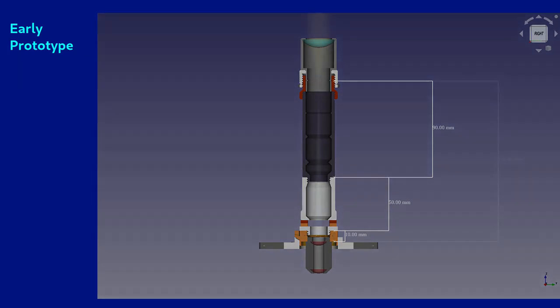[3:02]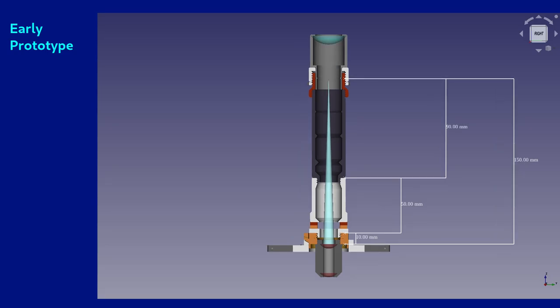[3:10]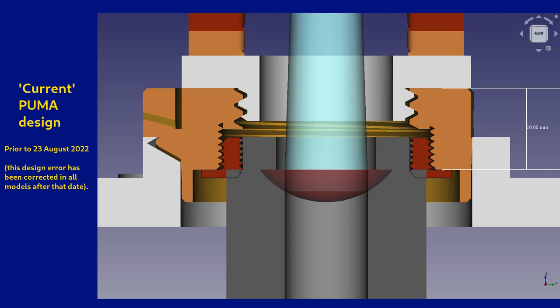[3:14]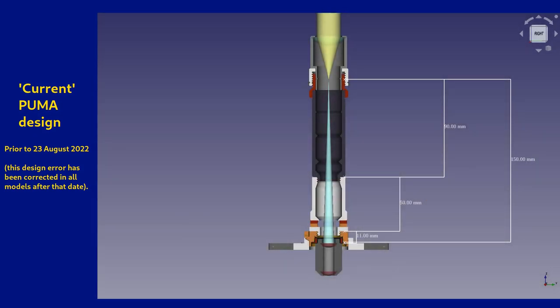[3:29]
I therefore designed all the ocular head options on the basis that there was a further 90 mm of optical path length left to fill before the focal plane of the ocular, which must occur at 150 mm from the flange of the objective for compliance with the RMS standards, as was described in the video on beam splitters and the advanced filter block. Unfortunately, when I added the C to RMS adapter to the design much later on, I did not compensate the ocular head's design for the extra 1 mm this pushes the objective down by. By moving the flange of the objective 1 mm lower, the new optimum focus point is also 1 mm lower, that is, 89 mm above the filter block and not 90 mm as before.
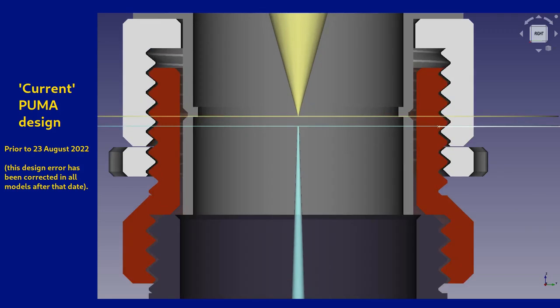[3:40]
So, because all the other measurements for the ocular heads were unchanged, the designed position of the ocular focal plane was still at 90 mm above the filter block, that is now at 151 mm from the flange of the objective, and so is 1 mm above where it ought to be with the C to RMS adapter in place. I redesigned the trinocular camera port system much later, and for that I did use the correct lengths, taking this extra 1 mm of the C to RMS adapter into account.
So, for the trinocular camera port, there is no 1 mm undershoot error that needs correcting. In fact, some of you who built a PUMA system prior to the updated parts that correct for this may have noticed that you need a larger ocular cap gap in the trinocular eyepiece holder to make it parfocal with the ocular head eyepieces. Well, now you know why.
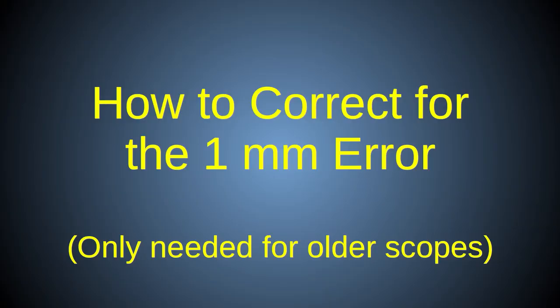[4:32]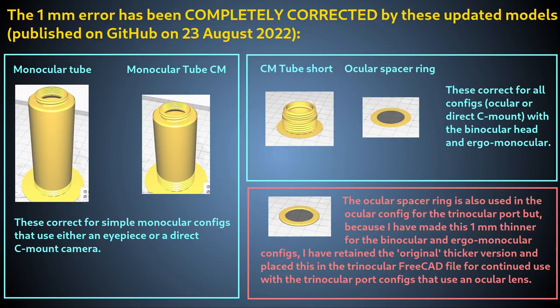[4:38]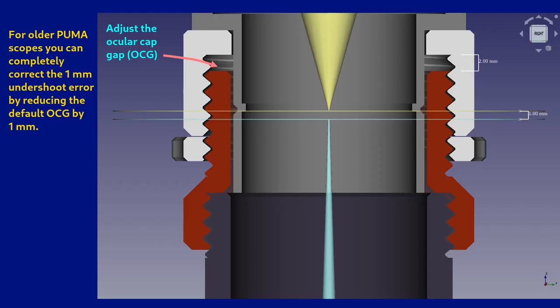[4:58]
I corrected this problem by updating the design of just 4 parts to make them 1 mm shorter than before. This update was posted on GitHub on the 23rd of August 2022, so anyone printing a PUMA microscope from models downloaded from the main GitHub branch after that date has nothing to do, because for you, this design error doesn't exist. For anyone with an older PUMA scope, it is very easy to compensate for this 1 mm undershoot error without doing any extra printing.
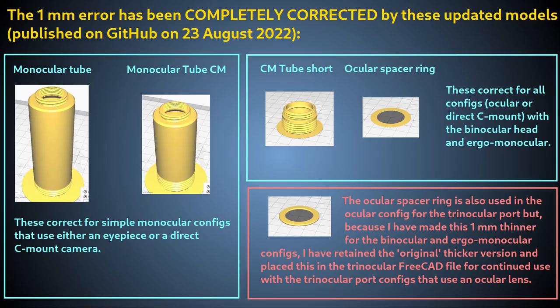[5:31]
For any config that uses an eyepiece, simply use a default ocular cap gap, or OCG, of 1 mm instead of the usual 2 mm. That's it. All done. For any config using a direct C mount camera, use your camera's focus adjustment to bring the chip 1 mm closer to the scope. If your camera doesn't have that ability, then you will need to print the updated C mount attachment described above.
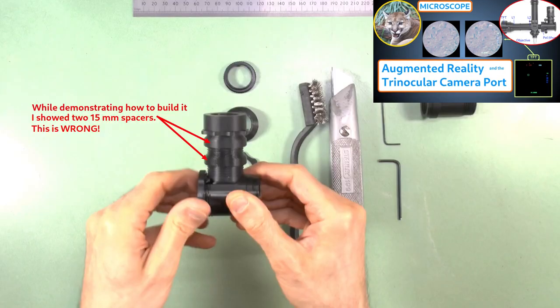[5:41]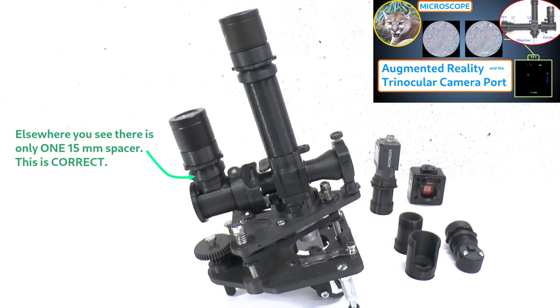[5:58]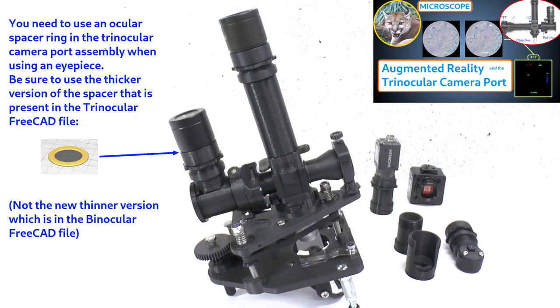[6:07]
One other error I noticed while reviewing my videos, which is not a design error but simply a demonstration error in the video, is that at one point in the video on the trinocular camera port, I wrongly showed the assembly of the ocular module with 2 15 mm spacers. This is wrong. Only one spacer should be used, as is correctly shown elsewhere in that video and in other videos I made. While on the subject of the trinocular camera port, bear in mind that you still need to use the original, thicker ocular cap spacer under the eyepiece.
This spacer was previously available in the binocular FreeCAD file, but because I have now changed that to a thinner spacer, I have included the old, thicker ocular cap spacer directly in the trinocular FreeCAD file on GitHub.
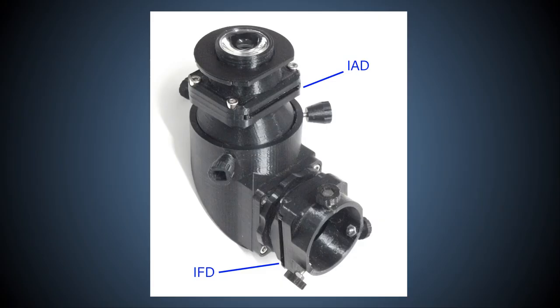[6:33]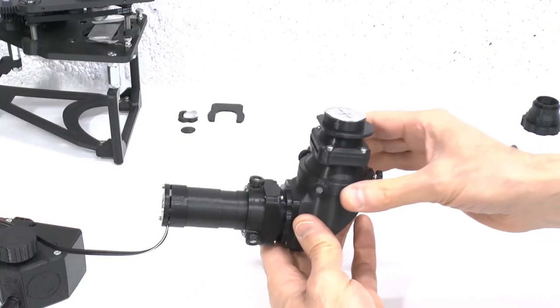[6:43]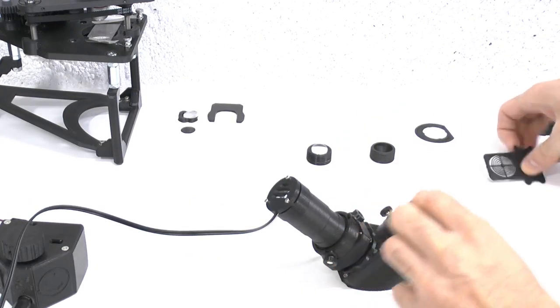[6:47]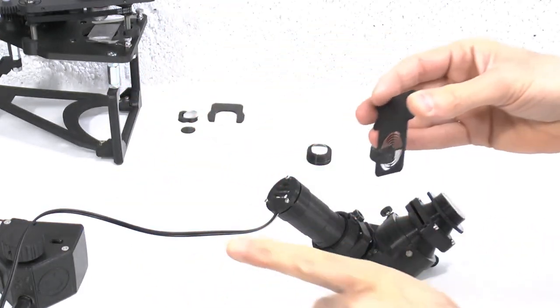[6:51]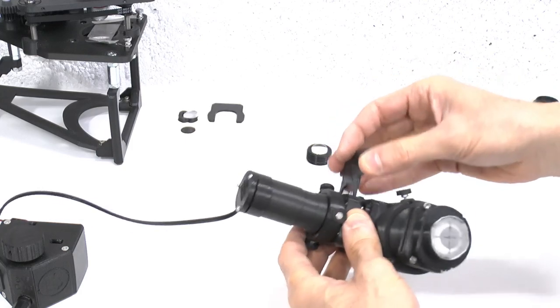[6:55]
This is not really an error, but a misleading demonstration regarding how to insert filters into the illuminated field diaphragm, or IFD, slot. While explaining how to fit the crosshairs IFD filter into its tray in the Köhler video, I said the part of the crosshairs filter which has the cavity must face outwards towards the lamp. This is actually correct, but only for the crosshairs filter.
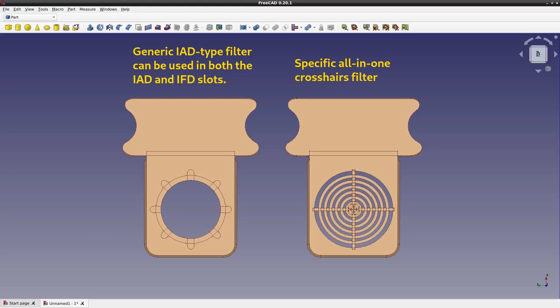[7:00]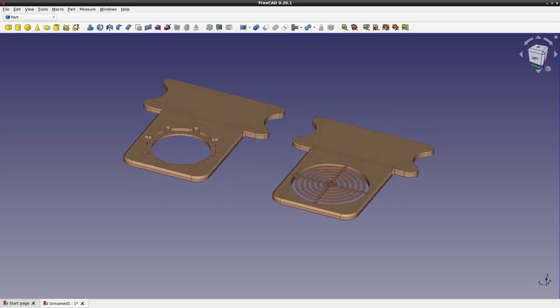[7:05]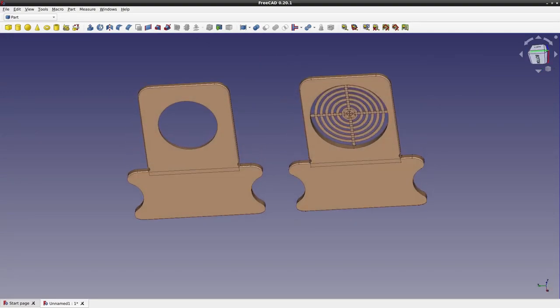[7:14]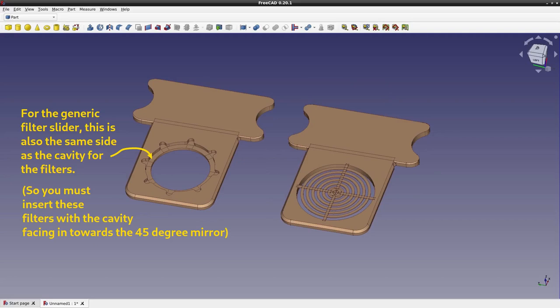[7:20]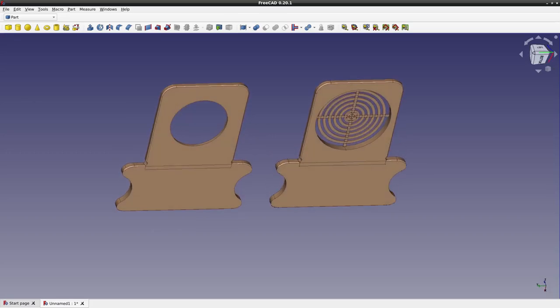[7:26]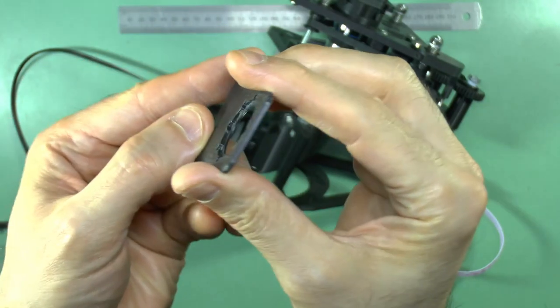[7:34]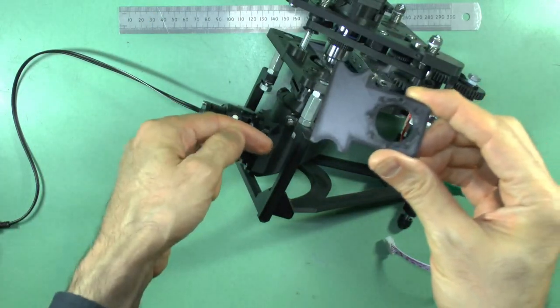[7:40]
That's because the chamfered edge of the filter slider must face in towards the mirror block, and the crosshairs filter is made with this chamfer on the bottom of the filter, away from the cavity of the filter. If you're using a generic IAD condenser type filter slider in the IFD filter slot, bear in mind that those filter sliders are constructed the other way round compared to the crosshairs filter. That is, with the filter cavity on the same side as the chamfer on the edge. So, for all IFD filters other than the all-in-one crosshairs filter, you must insert them with the filter cavity facing inwards towards the mirror block.
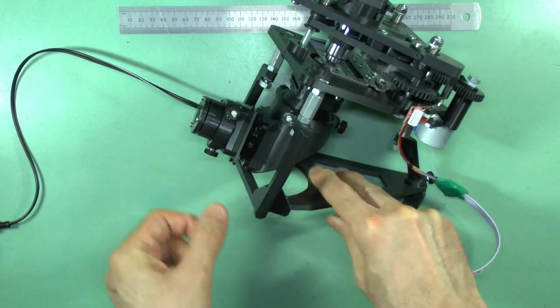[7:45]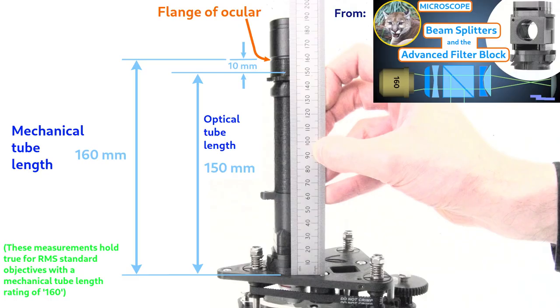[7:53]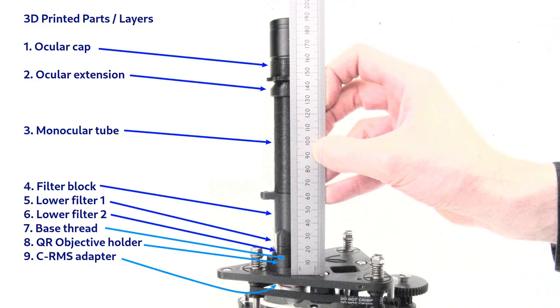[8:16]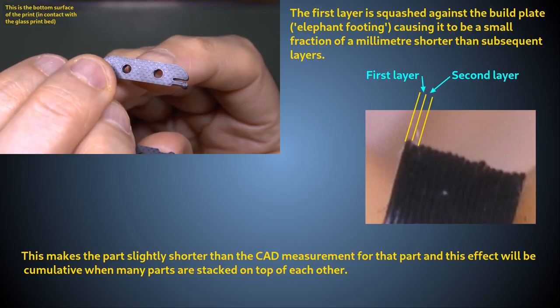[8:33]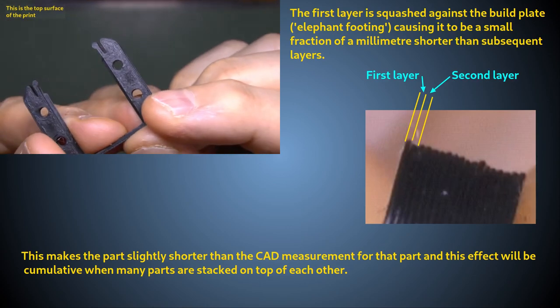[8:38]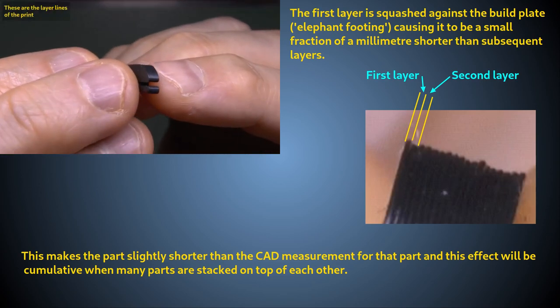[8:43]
The reason for this discrepancy between the 3D print and the CAD file measurements is due to the fact that the optical tube of the scope up to the top of the filter block, especially with the advanced filter block, is made up of many 3D printed parts layered on top of each other. Each layer printed slightly shorter than the CAD measurement due to a small amount of elephant footing in my printing. This tiny amount of shortening, compounded over multiple parts, summed to be approximately 1 mm of shortening in total. So, a structure that on CAD was a height of 61 mm, in 3D printed practice, turned out to be closer to 60 mm.
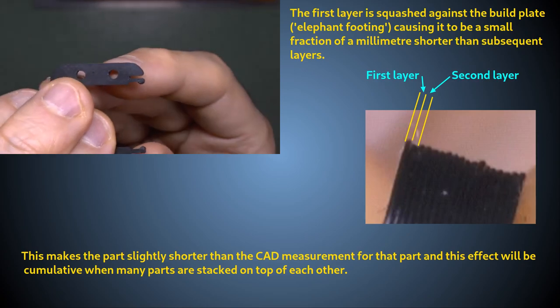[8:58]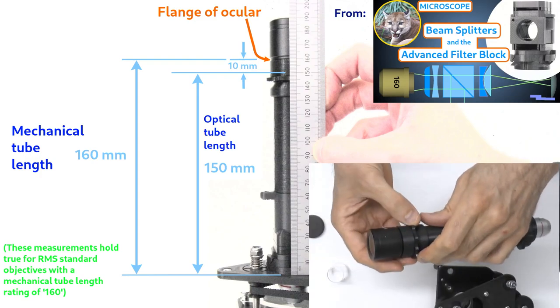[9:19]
This illustrates an important general point. There will inevitably be variations in the microscope mechanical tube length due to the tolerances of 3D printing. For the best performance from your optics, you should make whatever adjustments are required to ensure that your eyepiece focal plane is as close as possible to 150 mm from the flange of your objective. For any configuration using an eyepiece, this adjustment can easily be made by varying the size of the ocular cap gap, or OCG.
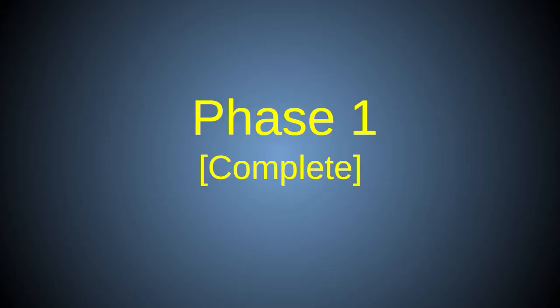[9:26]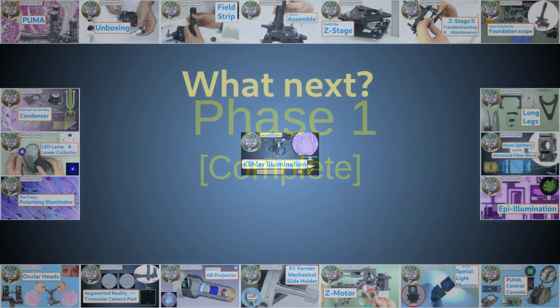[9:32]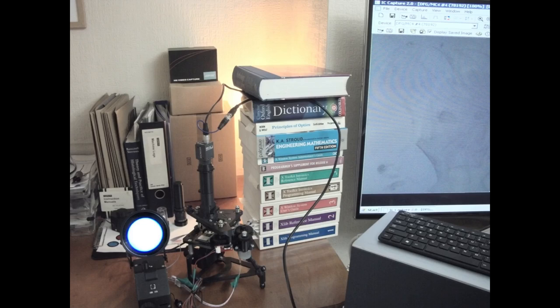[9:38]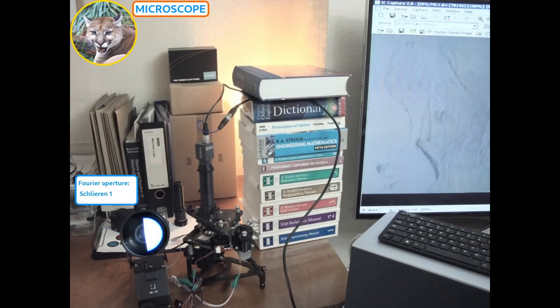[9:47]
I hope this video has been helpful, and my apologies if this caused any confusion amongst those who already have PUMA microscopes. This video concludes the tutorial series for the PUMA microscope system as it was originally published in the Journal of Microscopy in 2021. Future videos will concentrate on applications experiments, updates, usage tips, and details of new or updated modules.
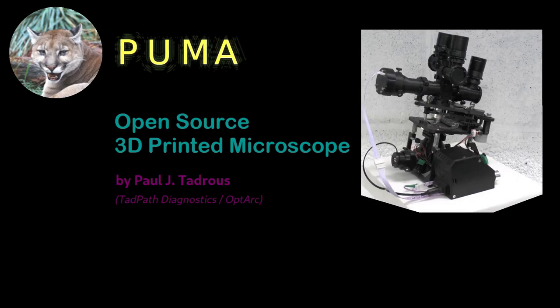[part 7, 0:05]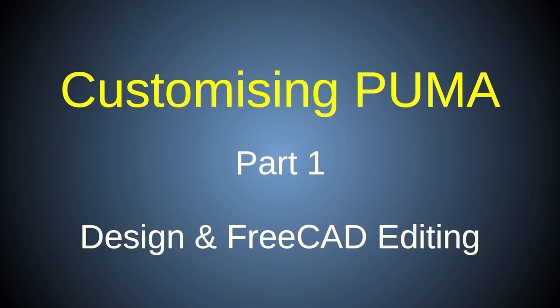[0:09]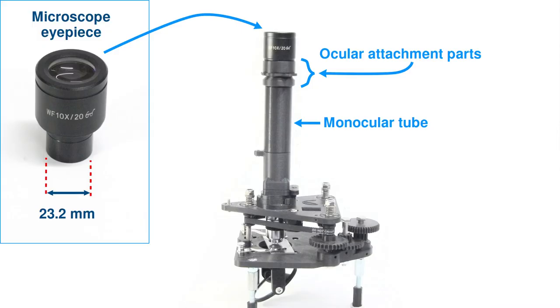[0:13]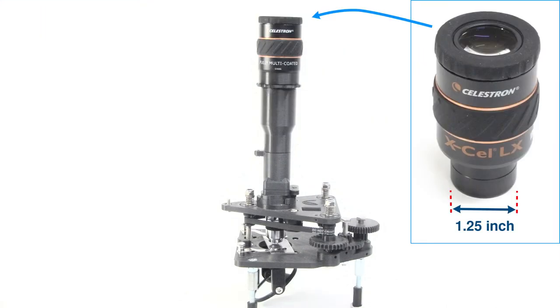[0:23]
This is the first of two videos in which I'll show you how to customize the PUMA microscope. To do this, I'll use a specific example where I modify the monocular tube and ocular attachments to make them compatible with a 1.25-inch astronomical eyepiece, the Celestron X-Cel LX 18mm eyepiece.
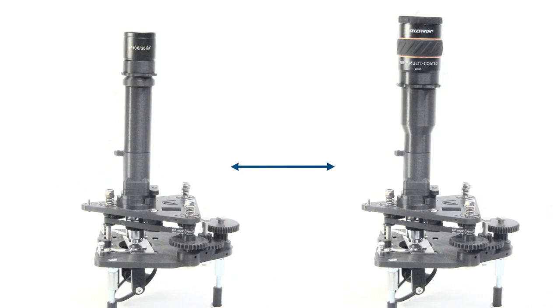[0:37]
This example will serve as a guide on how to go about customizing the microscope for any purpose, because I go through the process of defining the goals and editing the FreeCAD models in detail. So, even if this particular mod is of no interest to you, these videos as a whole may be useful anyway. In this first video, I concentrate on how to make the design changes. The next video will concentrate on the actual 3D printing and use of the new models.
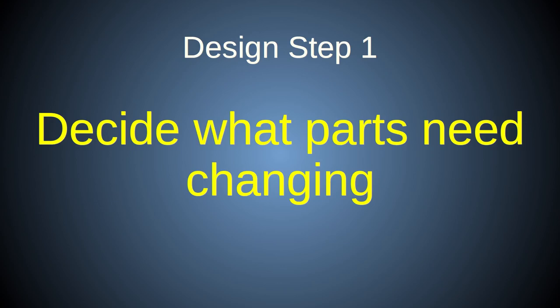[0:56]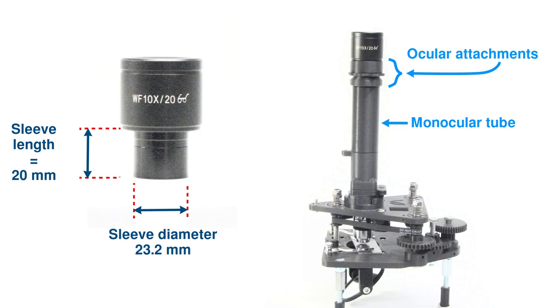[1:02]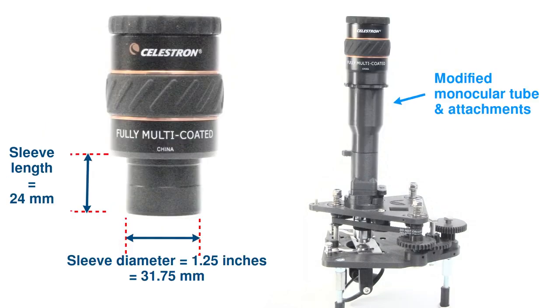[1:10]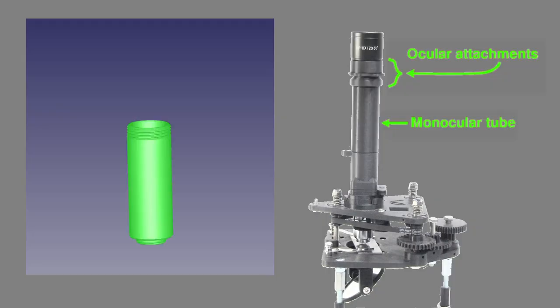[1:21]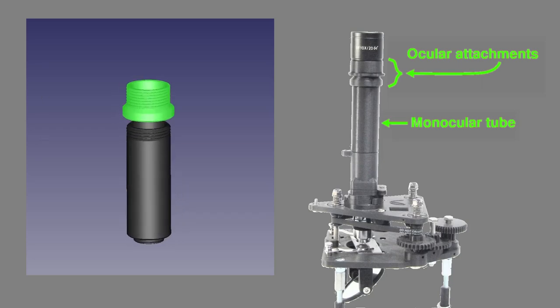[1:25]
The first step in any mod is to define what parts need changing and if new parts need to be added. For this example, we need to fit an eyepiece with a wider diameter sleeve into the monocular head of the scope, so the diameter of the parts that accept the eyepiece sleeve must all be widened. Specifically, these are the monocular tube, the 15mm extension, the ocular cap, and the ocular locknut.
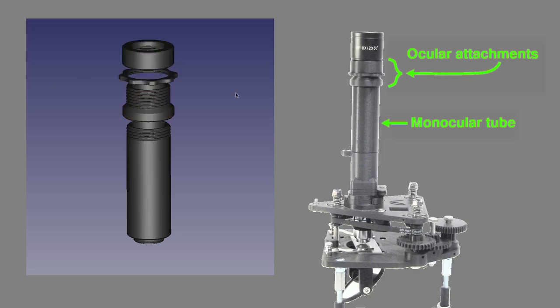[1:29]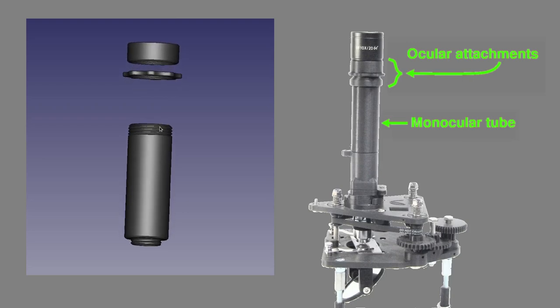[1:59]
However, the 15mm extension is designed to make all the various ocular configurations of PUMA easily interchangeable. But in this case, we only want to use the monocular config, so we can omit the extension and modify the new monocular tube to compensate for that. Note that the threading on the extension that accepts the ocular cap and locknut is longer than on the original monocular tube, so since we're not going to use an extension in this mod, we need to extend the amount of threading on our modified monocular tube to make up for this.
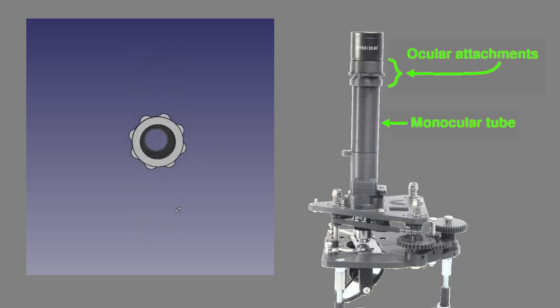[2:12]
Finally, we need to alter the length of the monocular tube, partly to compensate for the loss of the 15mm extension, but also to ensure the focal plane of the new eyepiece is placed at the correct level to catch the objective image at its optimal point.
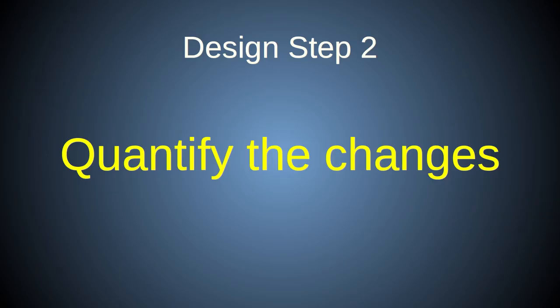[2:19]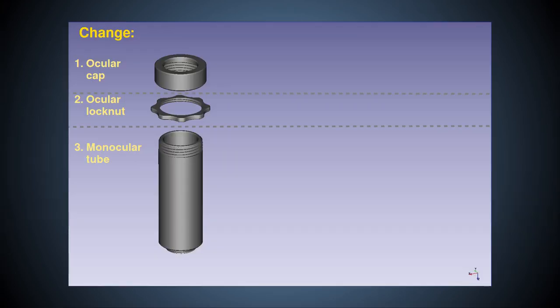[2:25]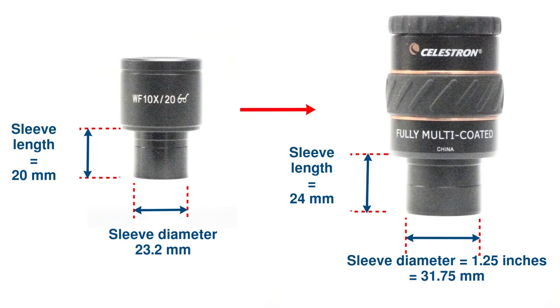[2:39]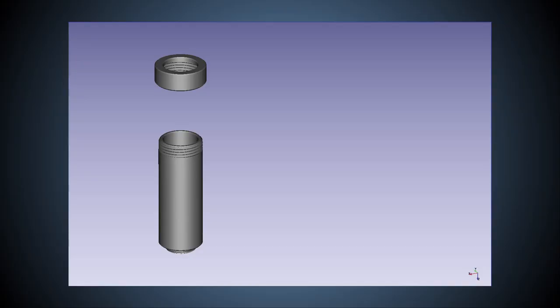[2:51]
Now we know what parts we'll be modifying, we need to specify the exact modifications to make the changes to the CAD models. Most obviously, the diameter of the parts must be enlarged to accept the 1.25-inch diameter sleeve. I work in millimeters, so 1.25 inches is 31.75 millimeters. Currently, the PUMA scope parts accept 23.2mm eyepieces and have an internal diameter of 23.4mm for the ocular cap and 23.6mm for the monocular tube.
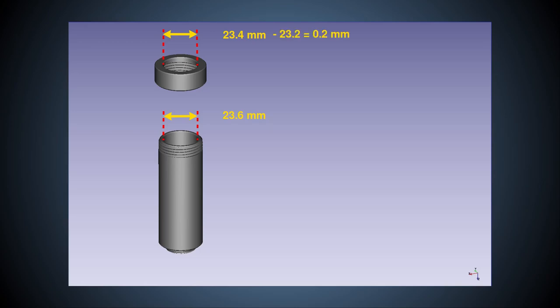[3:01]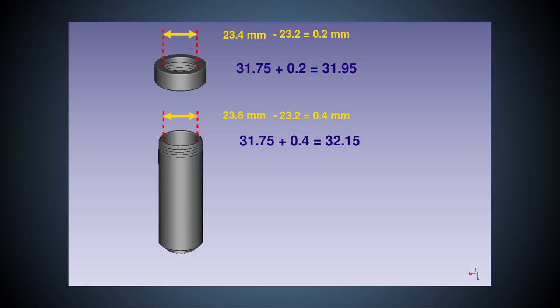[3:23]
The extra 0.2 and 0.4mm of diameter in these parts over the 23.2mm of the eyepiece sleeve ensures a good fit even with the tolerances of low-cost FDM printing. In FreeCAD, we use radii instead of diameter, and I measure only to 2 decimal places of a millimeter. So, by adding these 0.2 and 0.4mm of extra diameter space to the 31.75mm diameter of the new eyepiece sleeve, halving to get radius measurements and rounding to 2 decimal places, we get the new inner radii of 15.98mm for the ocular cap and 16.08mm for the monocular tube.
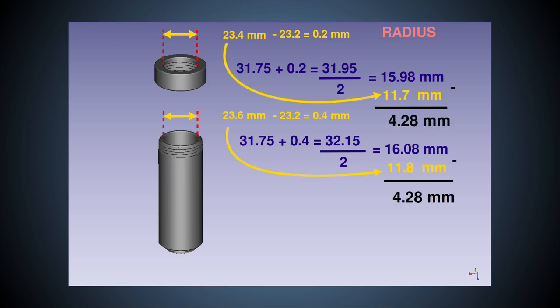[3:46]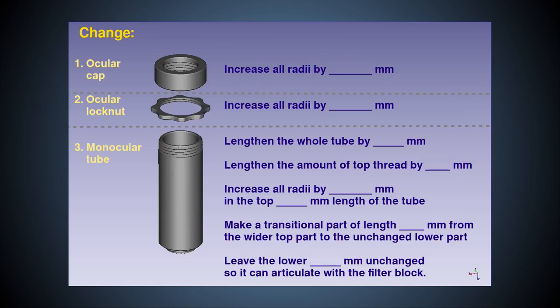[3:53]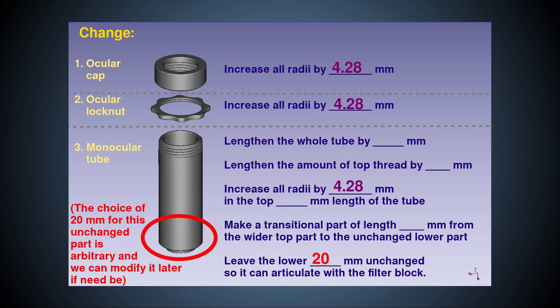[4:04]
In both cases, we'll be increasing the radius from the original design by 4.28mm. In order to keep wall thicknesses the same, we'll increase the radius of all parts of the models by 4.28mm, not just the internal radii. Clearly, we don't want to change the bottom end of the monocular tube because that thread articulates with the filter block, and that part is not changing. So we'll need to fashion a transition of some kind from the original dimensions at the bottom to the new wider dimensions at the top.
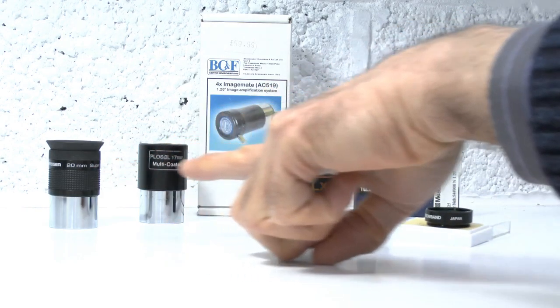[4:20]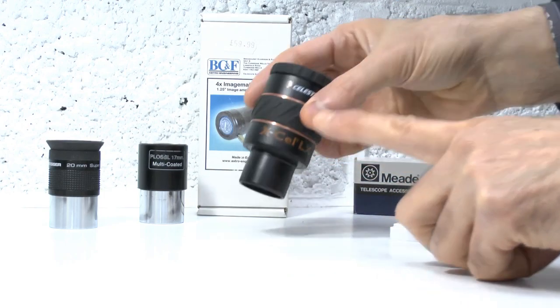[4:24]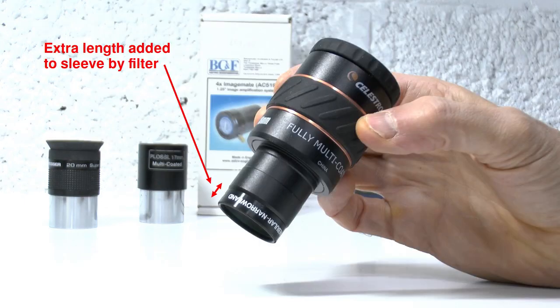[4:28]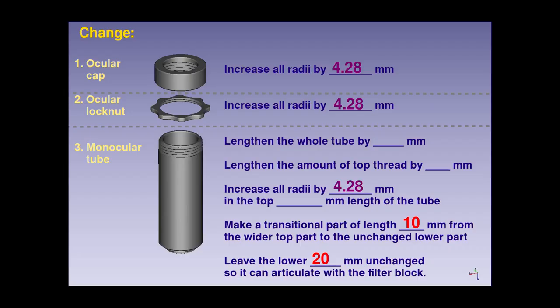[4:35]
The various astronomical eyepieces I have in my collection have a sleeve length of up to 30mm. But these can also take filters that extend the length. So, to ensure there'll be enough room for general use, I plan to make the increased tube radii extend for at least 5 centimeters down the monocular tube before transitioning to the original diameter for articulation with the filter block.
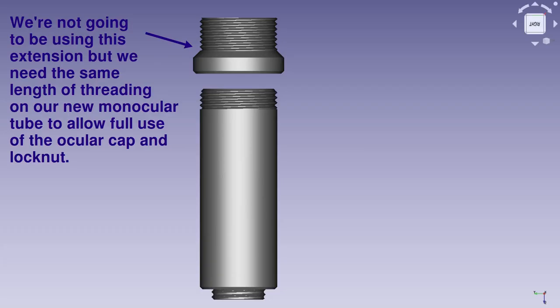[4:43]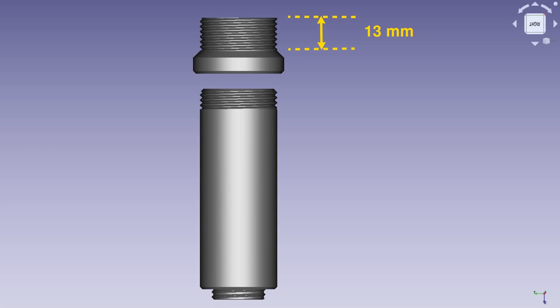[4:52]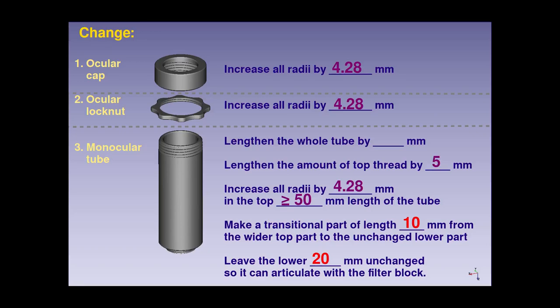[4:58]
Regarding the length of threading at the top of the monocular tube, the length of threading on the standard 15mm extension module is 13mm. But the length on the standard monocular tube is only 8mm, so we'll need to elongate that by 5mm to allow the same amount of adjustment room that the 15mm spacer would have provided. In order to decide the new length of the monocular tube itself, we first need to know the position of the focal plane of the new eyepiece.
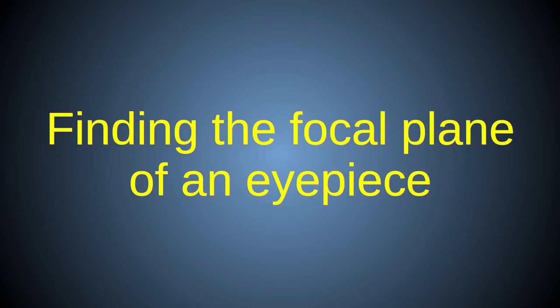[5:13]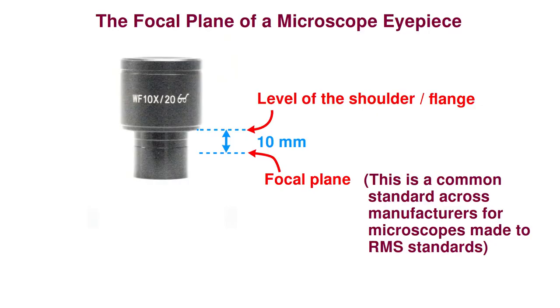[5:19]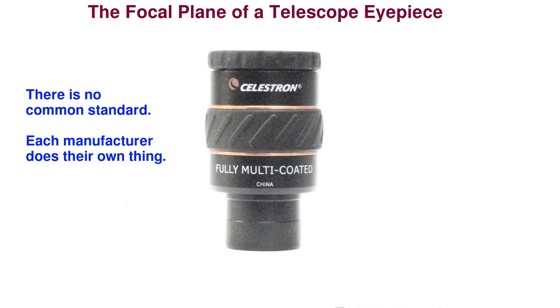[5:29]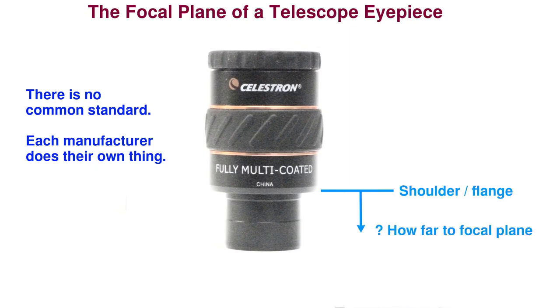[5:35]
Unlike microscope eyepieces that have a well-established standard position for their focal plane across manufacturers, being 10 mm below the shoulder or flange of the eyepiece, astronomical eyepieces have no such common standard. Not only does the level of the focal plane vary from one manufacturer to another, but even the same manufacturer will make eyepieces that have the focal plane in different places from one product to the next.
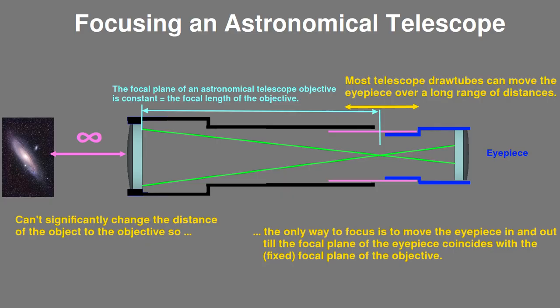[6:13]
Some manufacturers, like Celestron, will make a particular range of eyepieces, like the X-Cel LX series, that are all parfocal with each other, but they will not be parfocal with other series from the same manufacturer. To make matters worse, they don't even specify in their product specs where the focal plane is in terms of millimeters below the shoulder of the eyepiece, and in some eyepieces, the focal plane is not below the shoulder at all, but above it.
For astronomical telescope use, this variation and lack of information about the focal plane doesn't really matter, because the object is at infinity, and so can only be brought to a focus by the objective at one point. You can't change where the focus point is for any given objective, because you can't significantly change the distance from the objective to the object. Thus, for a telescope, all focusing is done by moving the eyepiece till the focal plane of the eyepiece coincides with the fixed focal plane of the objective. As long as you have an eyepiece focuser tube with enough travel distance to cover all the various levels of focal planes that various astronomical eyepieces may have, all is well.
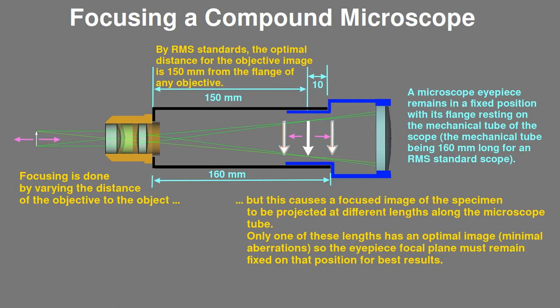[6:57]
However, for modern microscopes, the situation is different. In a microscope, the eyepiece is placed at a constant fixed optical distance from the objective by means of a fixed length of tubing on which the eyepiece rests, and focusing is done by changing the distance between the object and the objective. Microscope objectives can make a focused image of the object appear at a wide range of positions by simply moving the object closer to or further from the objective lens.
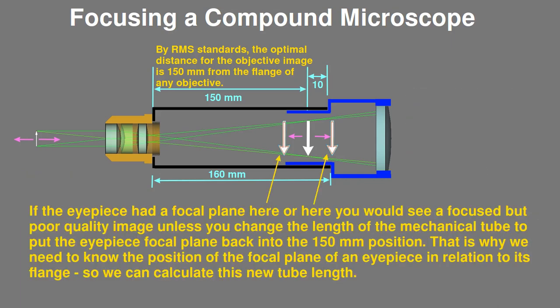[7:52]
However, the image will be optimally corrected for aberrations only at one of those points, which is the optical path length of the objective, which by RMS standard is 150 mm from the flange of the objective, or at infinity for infinity corrected objectives. So, for the best quality image, we need to ensure that the eyepiece focal plane is placed exactly at 150 mm from the flange of the objective. And to do that, we need to know where the eyepiece focal plane is in relation to the flange of the eyepiece so we can make the fixed tube on which the eyepiece rests the correct length.
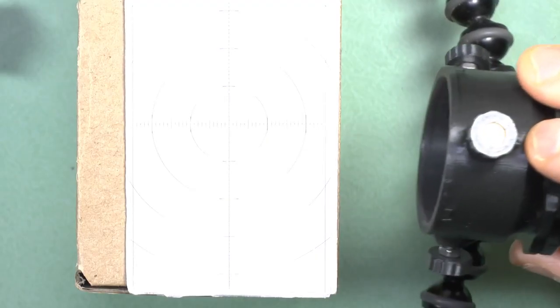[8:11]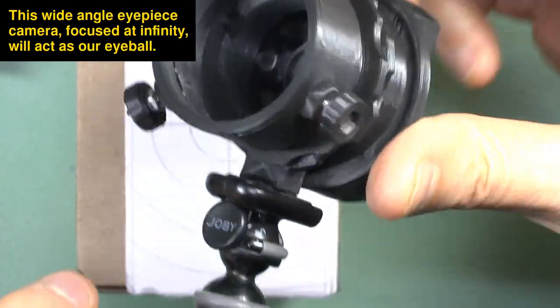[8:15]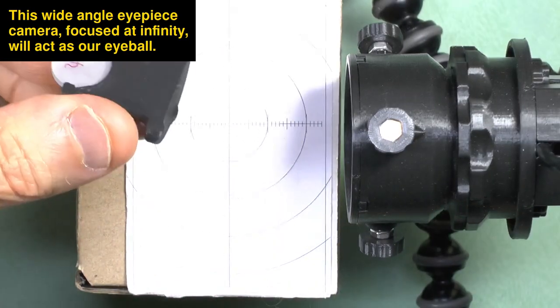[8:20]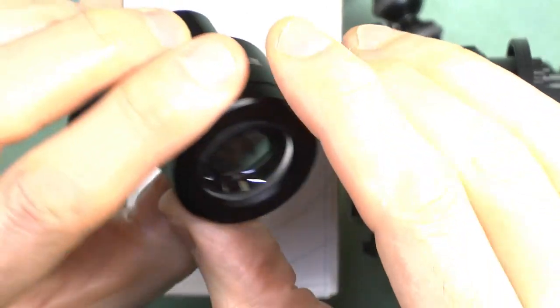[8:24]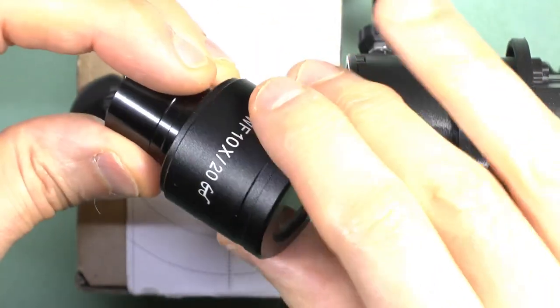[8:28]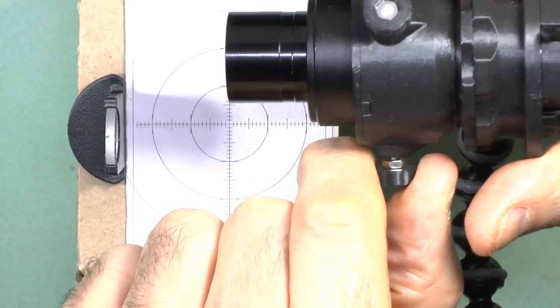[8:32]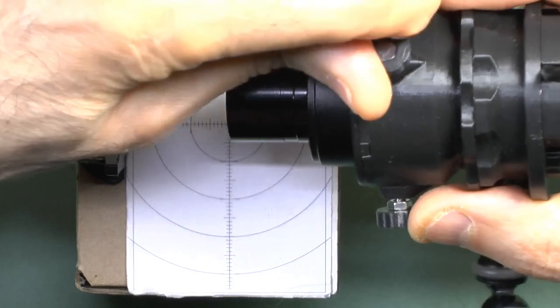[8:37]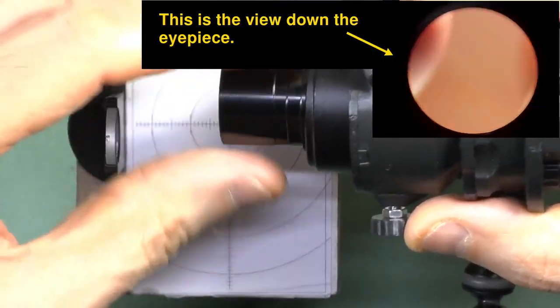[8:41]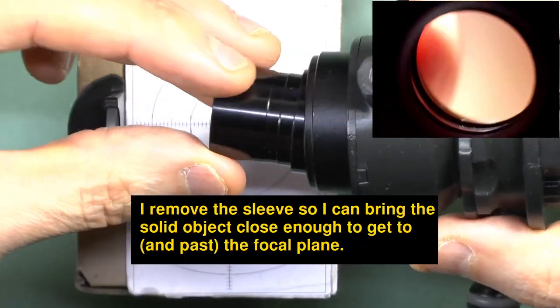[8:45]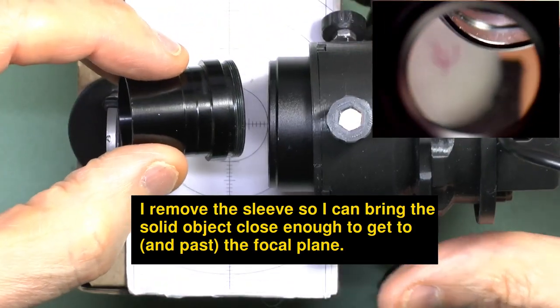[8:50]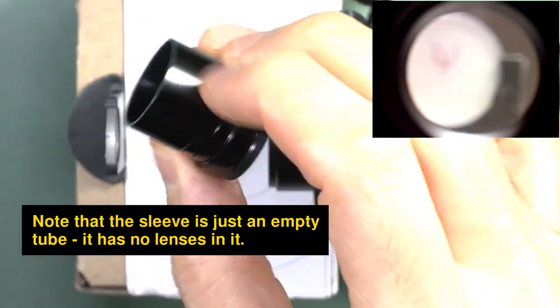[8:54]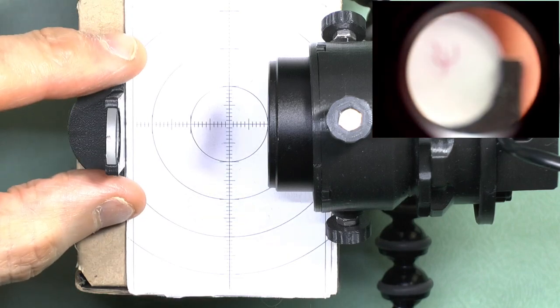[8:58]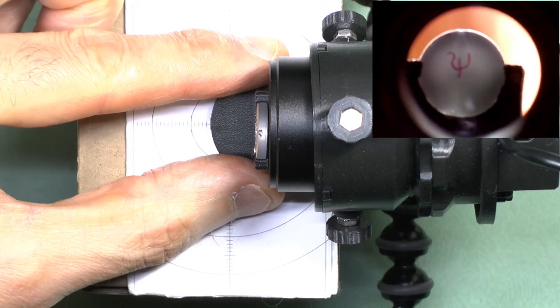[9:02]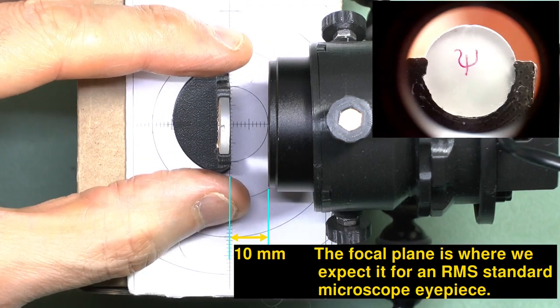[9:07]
Because Celestron doesn't tell us the position of the focal plane, we need to figure out some way to measure that for ourselves. One way to find the focal plane of an eyepiece is to look through it with your eye relaxed and looking into the far distance, or use a camera focused at infinity, and then bring some solid object up to the other end of the eyepiece. The point at which the object comes into sharp focus is the focal plane of the eyepiece.
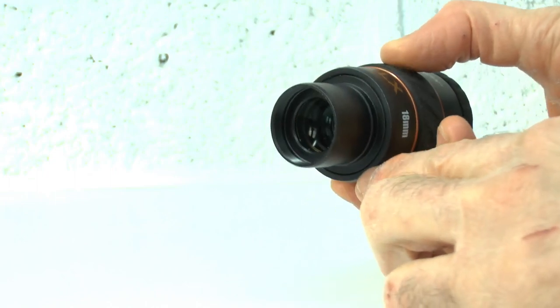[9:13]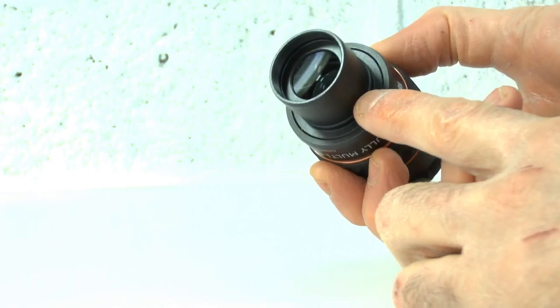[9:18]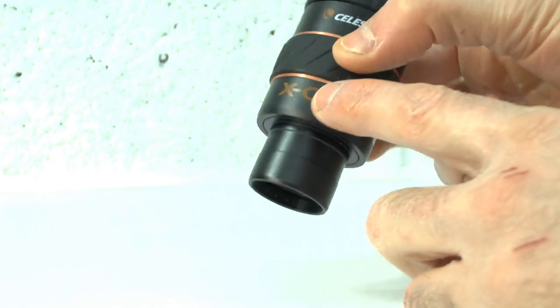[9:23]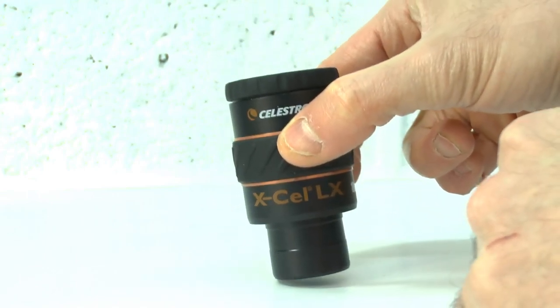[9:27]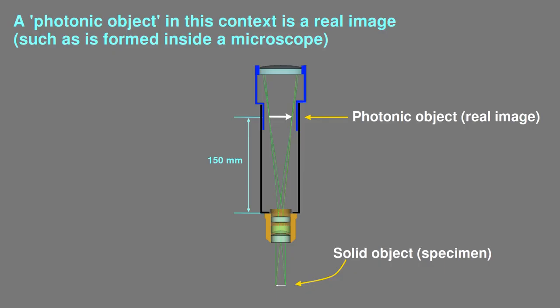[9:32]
Unfortunately, we can't use that method for the X-Cel LX eyepiece because it has glass lens elements placed in the sleeve beyond its focal plane. So we can't move a solid object through that glass to get it close enough to reach the focal plane, assuming the focal plane is not further out beyond the end of the sleeve. However, while solid objects can't pass through glass, photonic objects can. So all we need now is a photonic object generator. Then we can essentially use the same method as before, using a photonic object instead of a solid one.
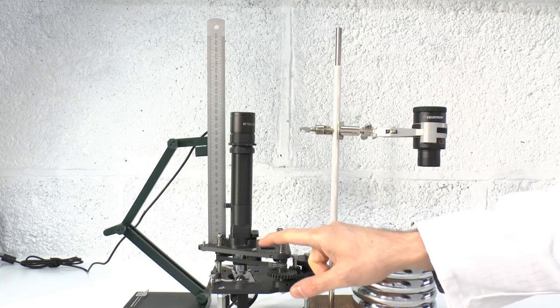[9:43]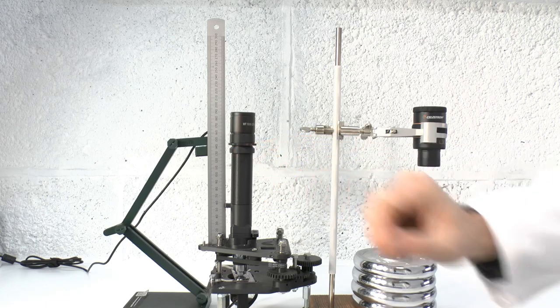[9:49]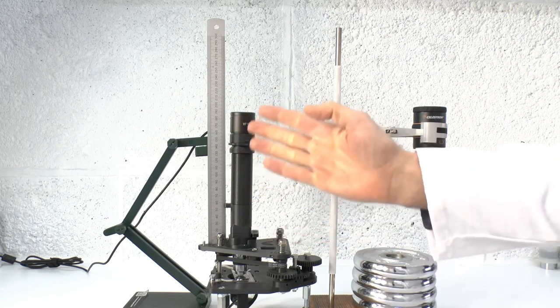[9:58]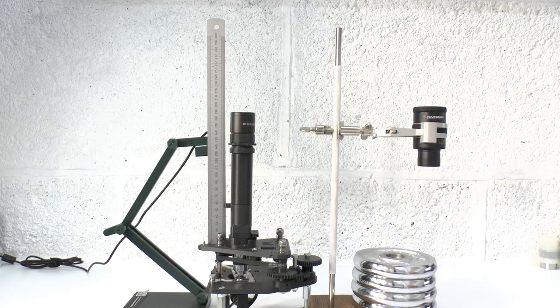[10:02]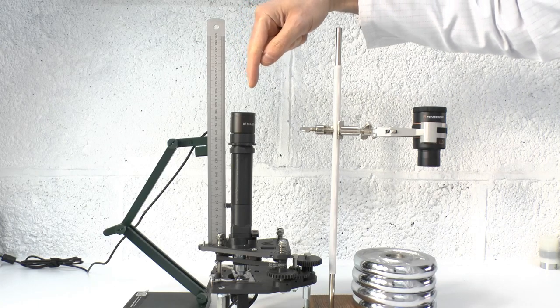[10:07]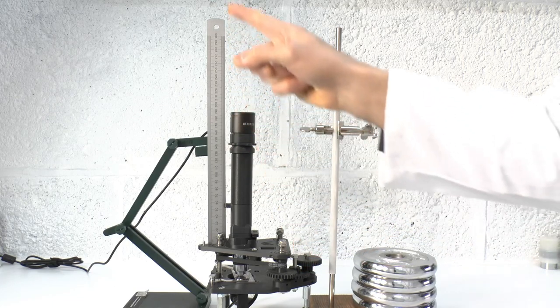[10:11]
Fortunately, the PUMA microscope itself can act as a photonic object generator. So I'll now demonstrate how to use PUMA to find the focal plane of the Celestron eyepiece. For this experiment, we'll start off with the PUMA microscope with its monocular head and a standard microscope eyepiece. Using either an eyepiece camera focused at infinity or your eye relaxed and looking into the distance, focus the scope as usual on a specimen. Set up a ruler so we can measure the distance from the focus platform upwards.
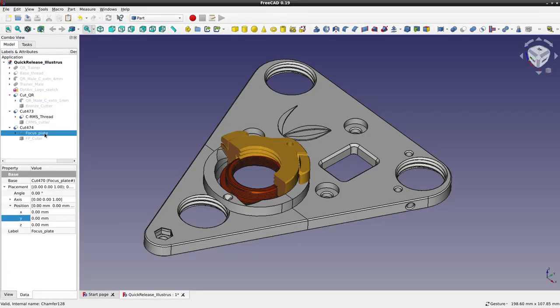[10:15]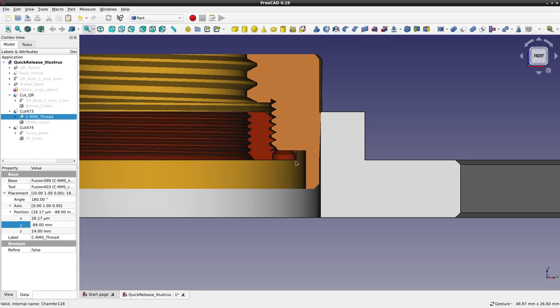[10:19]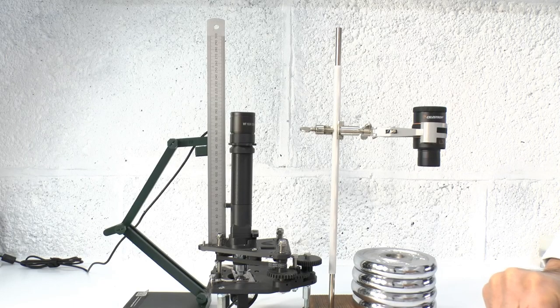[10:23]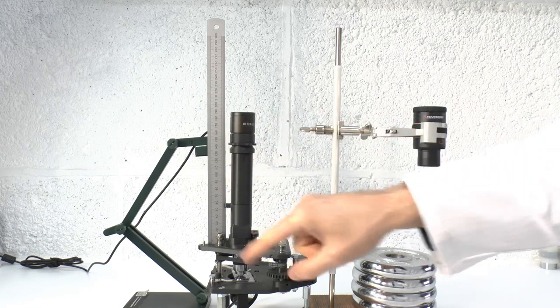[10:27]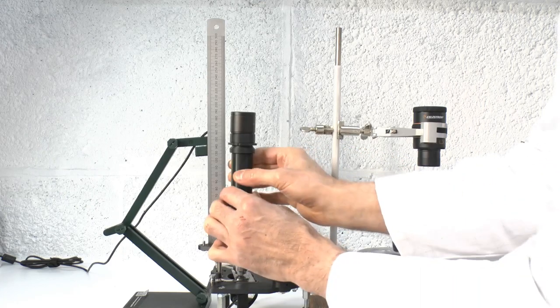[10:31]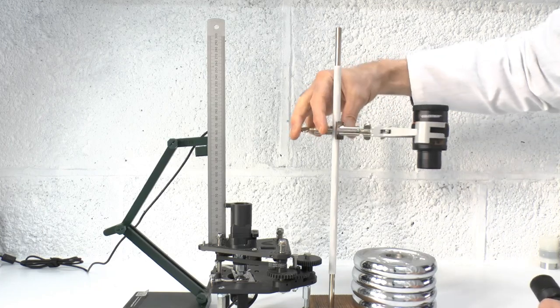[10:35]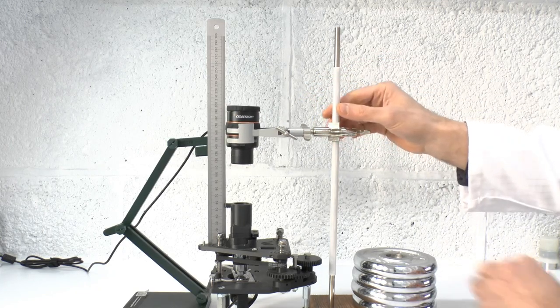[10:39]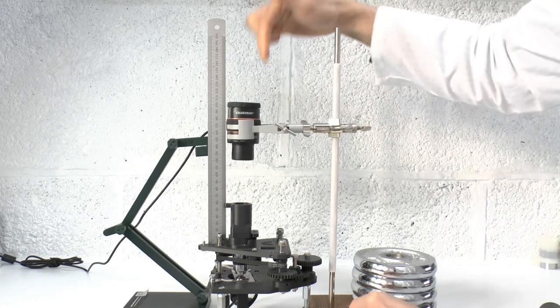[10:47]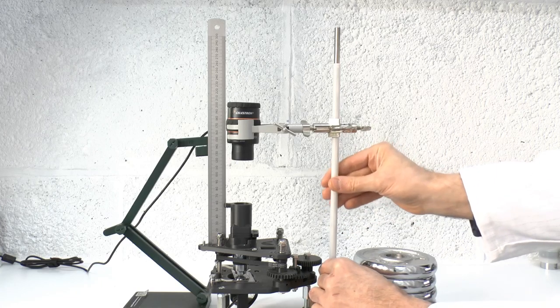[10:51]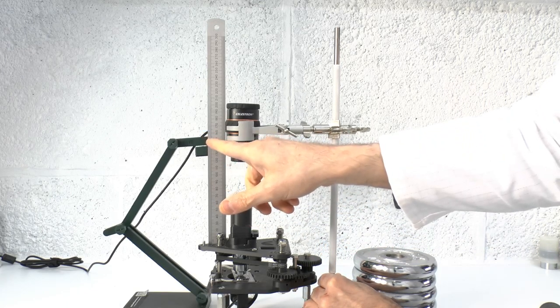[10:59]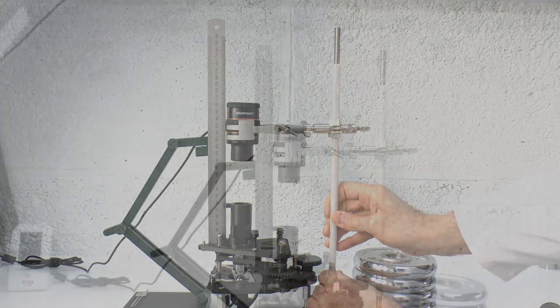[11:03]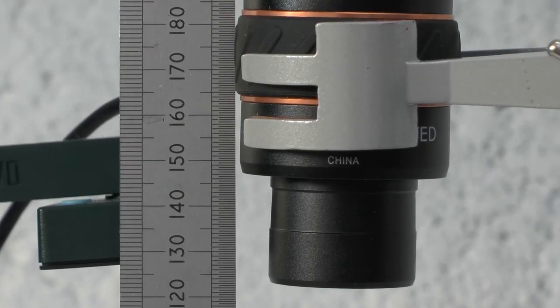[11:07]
We know that the level of the focus platform is the same as the level of the flange of the objective, so the optimal focal plane of an RMS standard objective will be 150 mm above the level of the top of the focus platform. Next, we remove the monocular tube without altering the focus of the scope, and we swing the Celestron eyepiece into position above the filter block. We then move it up and down along the optical axis until the image seen looking down the Celestron eyepiece is also in sharp focus. At this point, we know that the image from the objective coincides with the focal plane of the Celestron eyepiece, but we also know that the level of the objective image is 150 mm from the top of the focus platform. Therefore, we can identify the position of the focal plane of the eyepiece, which in this case is about 2 mm above the level of the flange of the eyepiece.
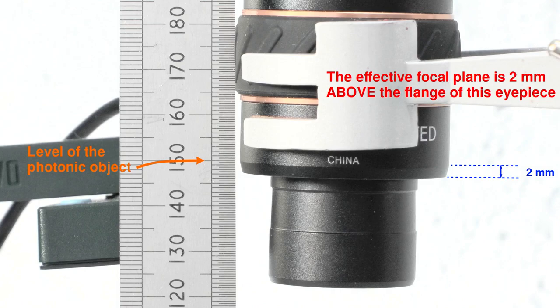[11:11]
Now, this method does not take into account the extra optical path length caused by the glass elements in the sleeve of the eyepiece. So, this is the effective level of the focal plane, rather than the physical level inside the eyepiece. But we don't need to know that physical level unless we want to take the eyepiece apart and put a graticule or some other physical object at the focal plane, and we're not going to do that here.
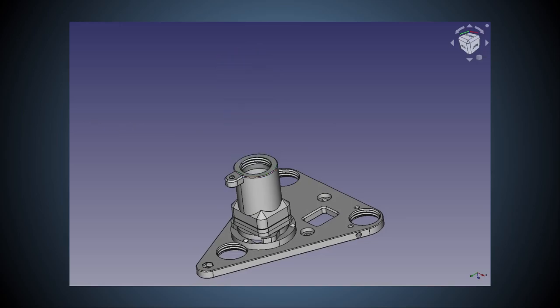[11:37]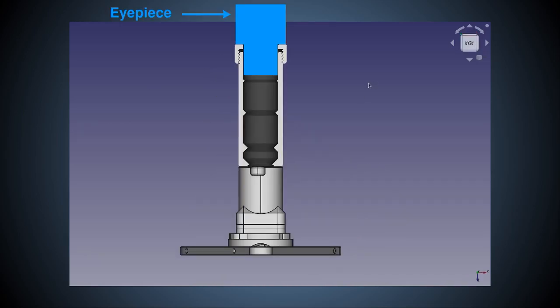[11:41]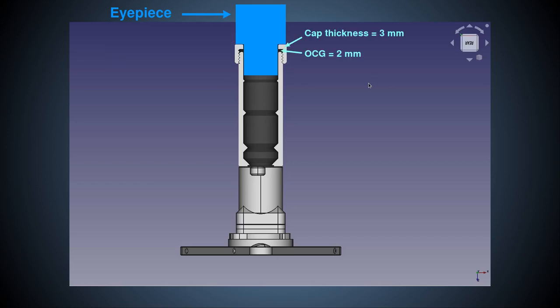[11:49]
So, now we have the final piece of information we need to customize the monocular tube for use with this eyepiece. The flange of the eyepiece will rest on the ocular cap, and the ocular cap will screw onto the monocular tube. Accounting for a default ocular cap gap of 2 mm, this means that there will be 5 mm from the flange of the eyepiece to the top of the monocular tube.
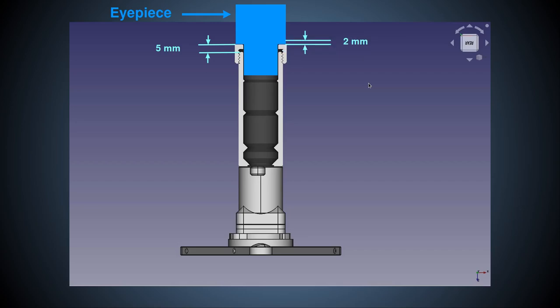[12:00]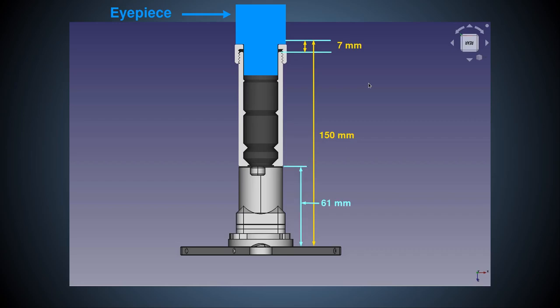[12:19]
We can now add the 2 mm above the ocular cap where the effective focal plane of the Celestron eyepiece is located. This means there is a total of 7 mm from the top of the new monocular tube to the focal plane of the eyepiece, which must be 150 mm in total above the flange of the objective. We know from the PUMA specs that there is 61 mm from the objective flange to the top of the filter block, leaving a further 89 mm to make up the required 150 mm.
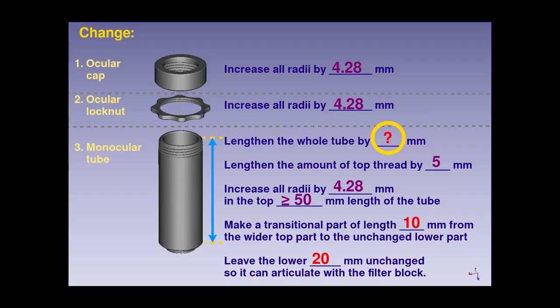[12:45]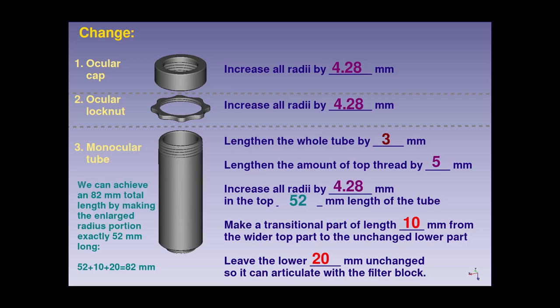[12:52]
Thus, the part of the new monocular tube above the filter block must be 89 minus 7 equals 82 mm. The original monocular tube is 79 mm long. So this means we must lengthen the new monocular tube by 3 mm compared to the original. Now I'll show you how to make these edits to the FreeCAD models.
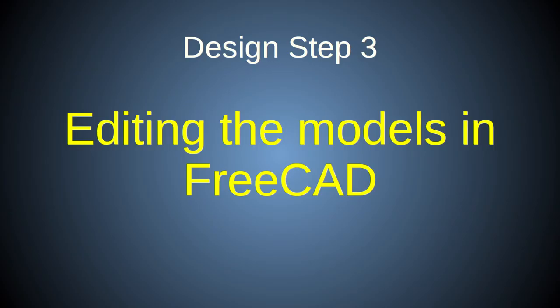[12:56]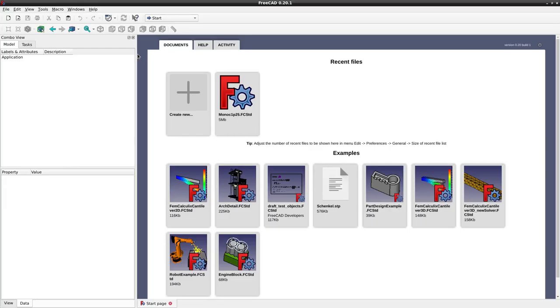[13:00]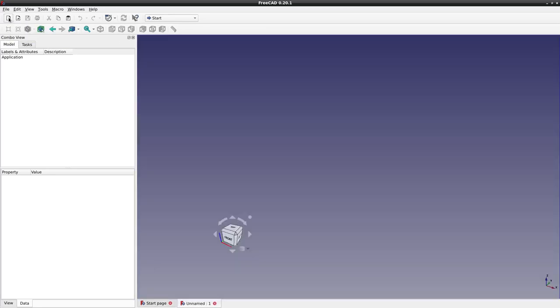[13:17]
Now before I show you the editing of the complex models themselves, I thought it would be helpful to give you a very basic introduction into how I make models with FreeCAD in general. So this is the FreeCAD startup screen, version 0.20.1 in Linux. And we'll start by creating a new file. You can either click here or up here.
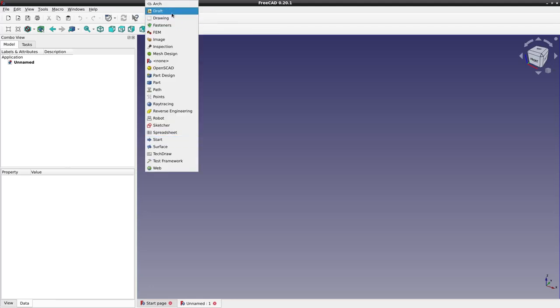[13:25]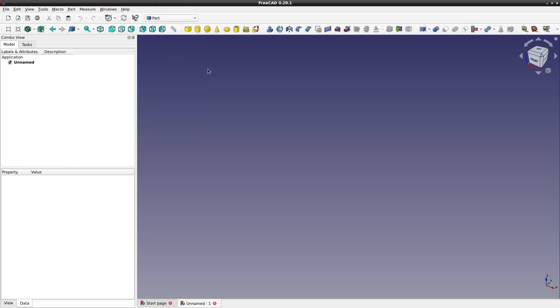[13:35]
Now you can do many things in FreeCAD, and for each job it requires a set of tools. In FreeCAD, tool sets are called workbenches, and you select which one you want from this drop-down list here. I'm going to be making a simple lens cap type model from basic parts. So I'm going to select the part workbench. It gives us a set of primitive parts we can begin with and ways to combine them and edit them. So I'm going to start with a cylinder.
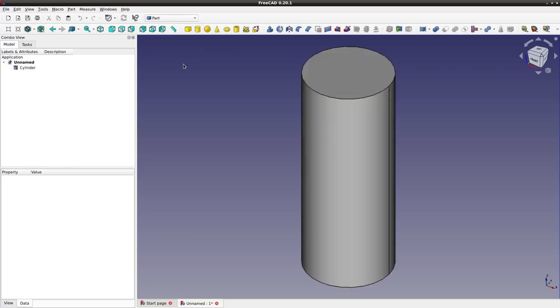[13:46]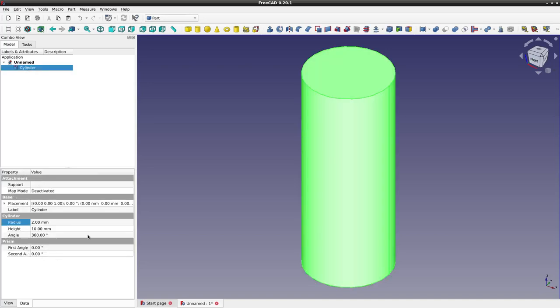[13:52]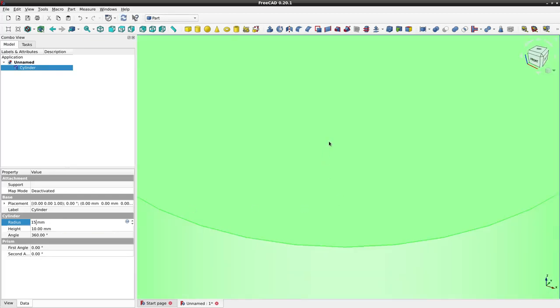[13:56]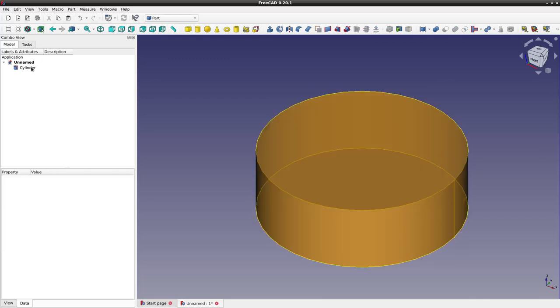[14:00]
Click here. I don't want this particular set of dimensions, but that's okay. We can change that. So click on the cylinder, and now it gives us the things we can edit. So I'm going to increase the diameter to 15 millimeters. Use the scroll wheel on my mouse to zoom out. And I'll select it, press F2 to change the name, and I'll call it cap solid.
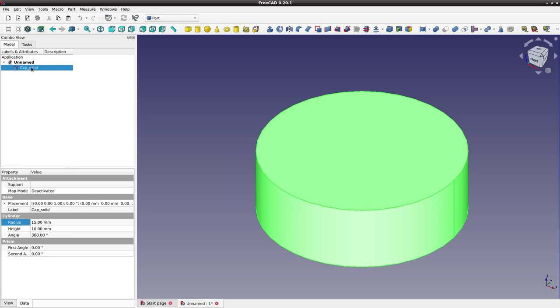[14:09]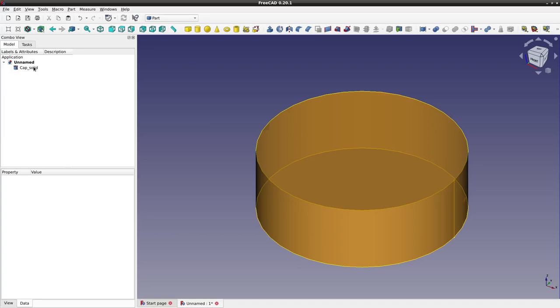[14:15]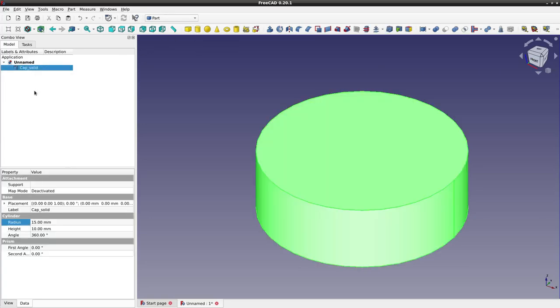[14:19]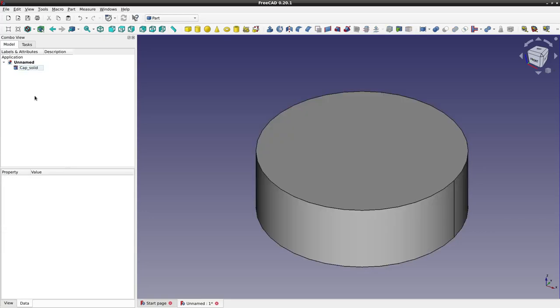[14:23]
Now I want to subtract something from this solid cylinder to make it into a cap. So another cylinder. I could select another cylinder from here, but this one has roughly the right dimensions I want already. So I'll just copy this, Control C, and then select the background, then Control V. And now I'll change the name of this one, F2, to cap cuts.
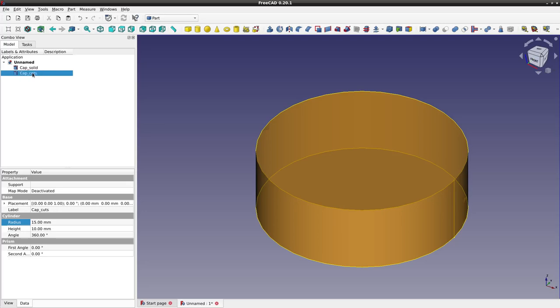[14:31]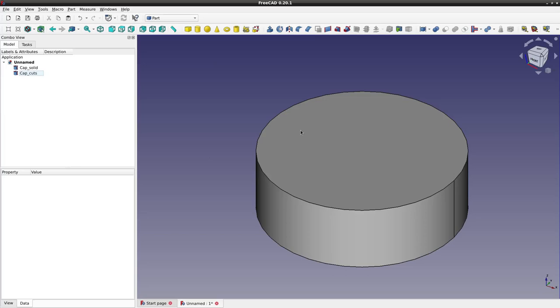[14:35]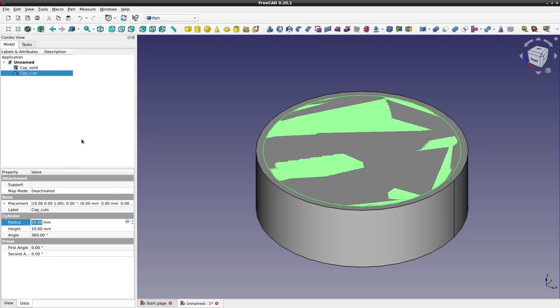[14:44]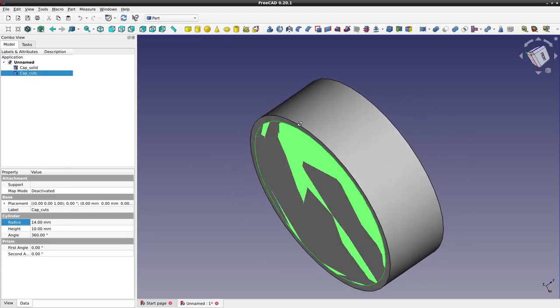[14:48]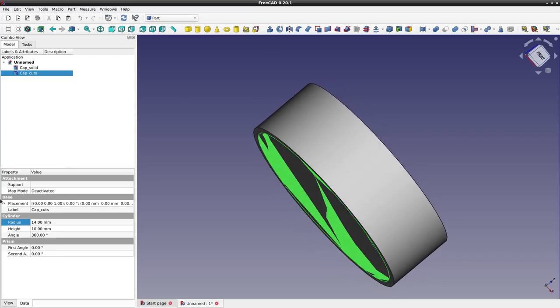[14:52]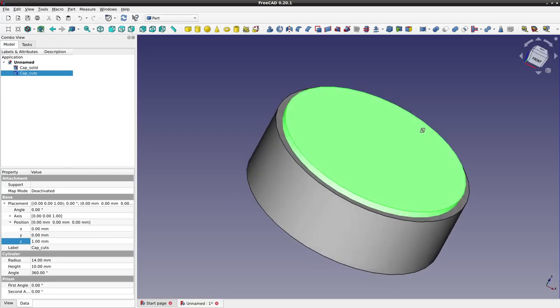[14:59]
Now I need to shrink the dimension a little bit before I cut it away from the solid, otherwise they're equal cylinders, so there'd be nothing left if I just did the cut like this. So we'll reduce the radius by 1 millimeter. Now if we cut this away from solid, we'll just get a ring. So to make it a proper cap, we need one surface to be solid. So I will go to placement, position, and I'll increase the position in Z by 1 millimeter. There we are.
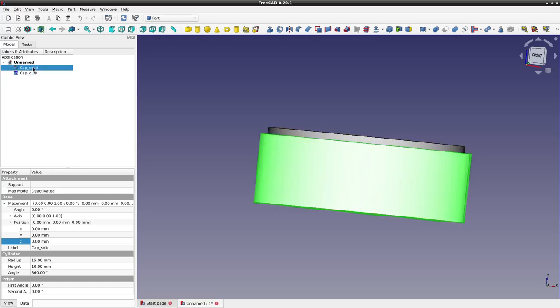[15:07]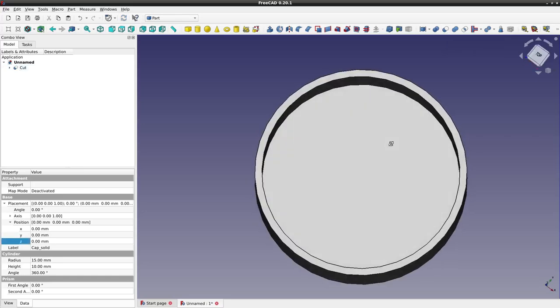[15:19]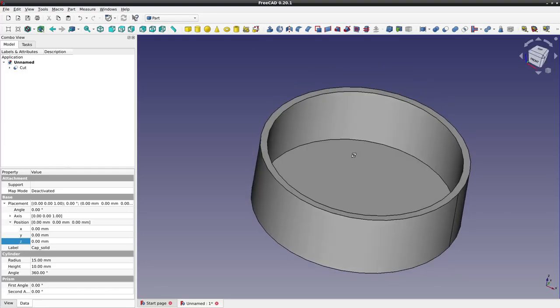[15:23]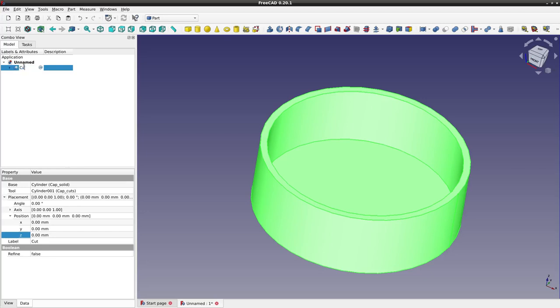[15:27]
So now we can cut this cuts part away from the solid part, and we'll end up with something that looks like a cap. So select the solid part first, then with the control button down, you select the thing you want to cut away from the solid part, and then you select this button here called cut, and it does the job for you. So now this is your basic lens cap, but it has sharp edges. So I will call this cap sharp, and then I will smooth the edges.
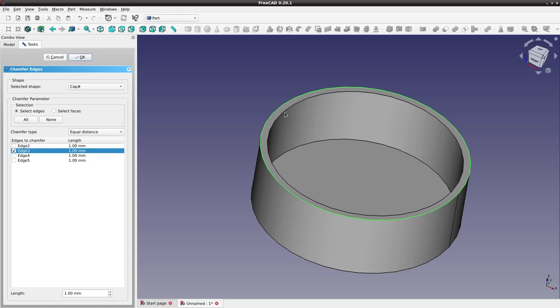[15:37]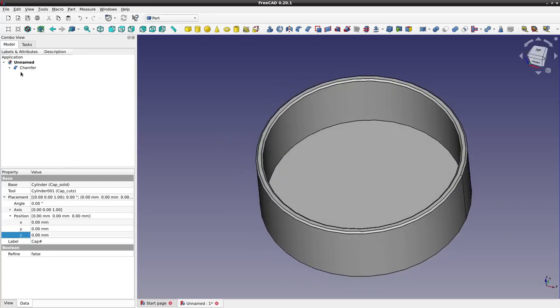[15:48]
So it's selected. I will now select the chamfer tool, and we'll select the edges with the mouse. So this edge, and this edge, and we'll make a chamfer of 0.25 millimeters. Say OK. So this is our final product. Now we'll change the name again, F2, cap.
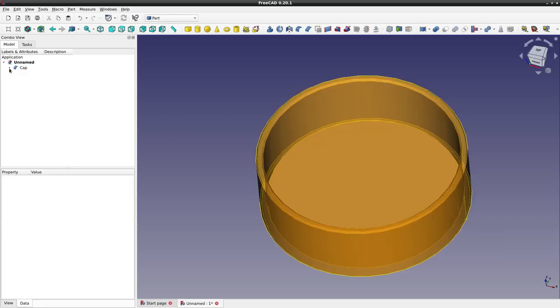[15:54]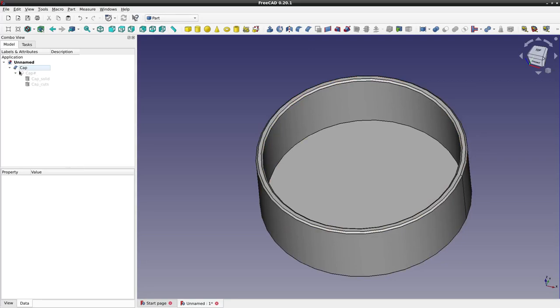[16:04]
Now you'll notice if you open up this tree on the side here, all the steps that we did have been recorded in a tree-like notation. You can actually edit the individual parts of this without undoing everything, provided it doesn't break the model. If it's going to break the model, then you'll need to undo the steps and then do the edit and then redo the steps that you've undone.
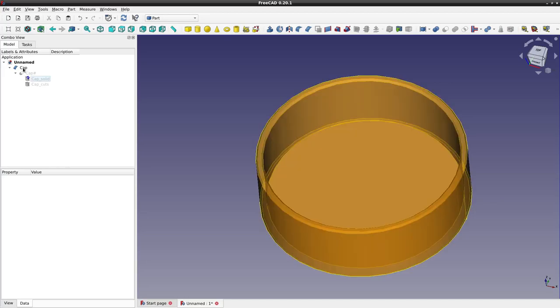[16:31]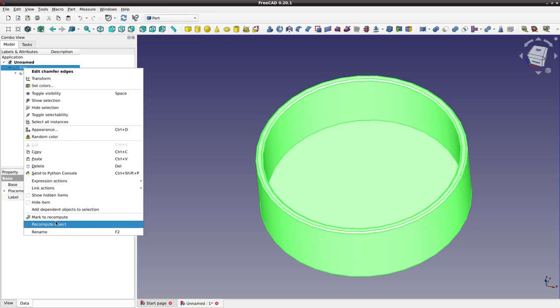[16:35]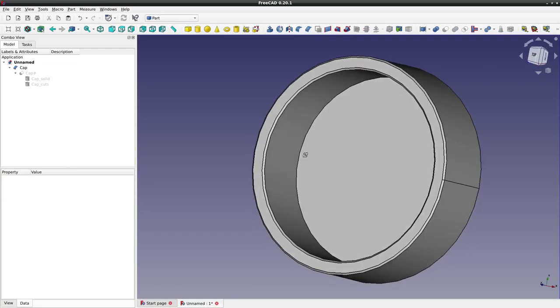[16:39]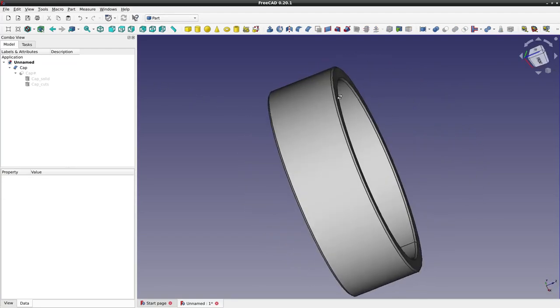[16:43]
So an example of something that won't break the model is if I increase the thickness of the wall. So if I use the cap solid, select that, I'll increase the radius to 16 millimeters. Now, you won't see anything at this stage until we recompute the model. So if I go back to the top, select it, right-click, we'll do recompute object, the model is recomputed with a thicker wall. So that's a basic example of how to build something with FreeCAD.
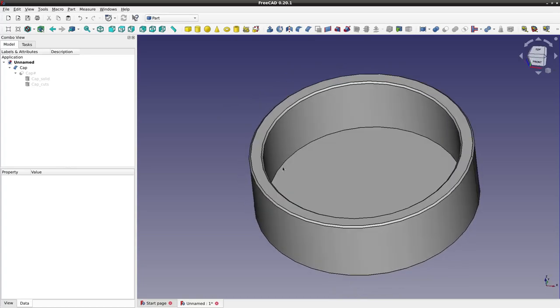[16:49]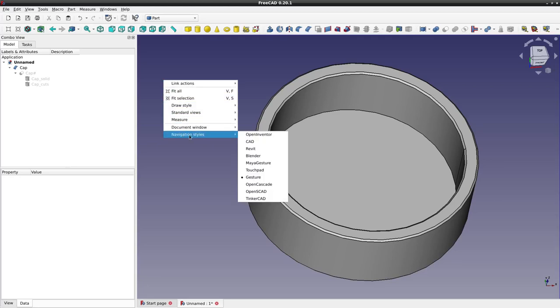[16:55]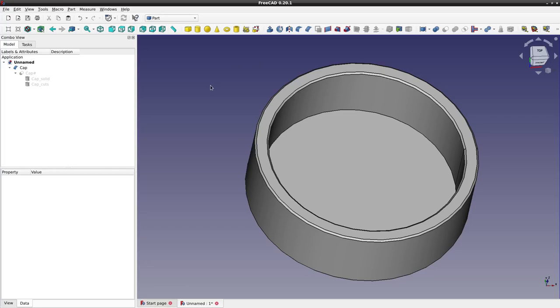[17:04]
Now, just a few words about the graphical interface here. There are different ways of manipulating 3D models on the screen, and you select the way you want by right-clicking on the background and go to something called Navigation Styles, and then you can select the one you like. I like this gesture method, but you may be used to some of these other ones. So you can select whichever one you like.
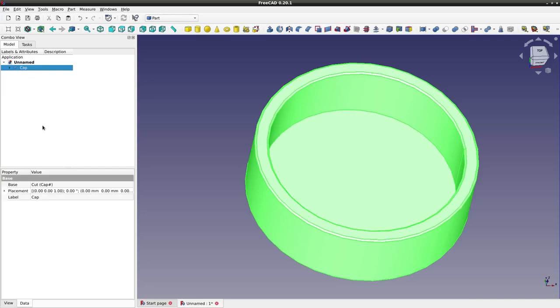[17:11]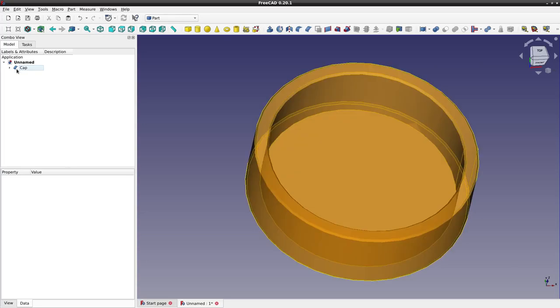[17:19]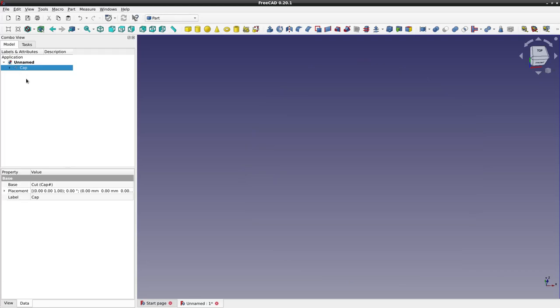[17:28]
And another thing is visibility. So we have a model, we can make it visible and invisible by clicking the space bar. Okay, click the space bar to make things visible and invisible. Just because something is invisible, it doesn't mean it doesn't exist. And I've had people emailing me with regards to the PUMA models and say, oh, all the models are grayed out, what's going on? It's just because they're invisible like that.
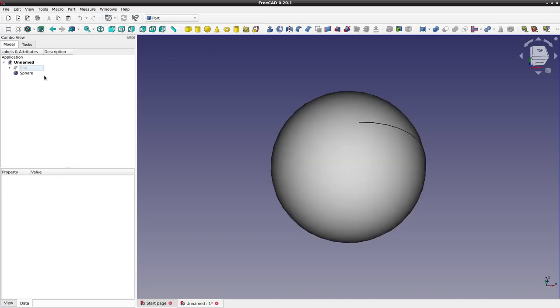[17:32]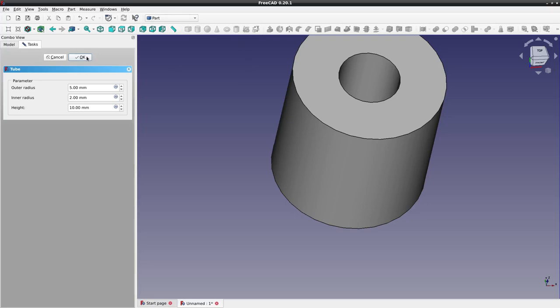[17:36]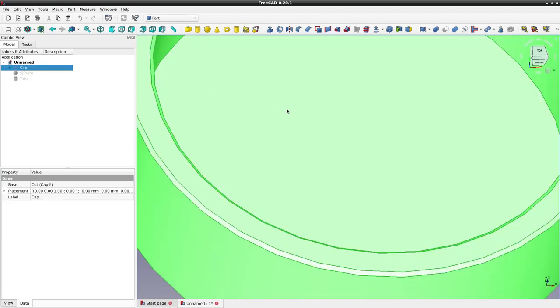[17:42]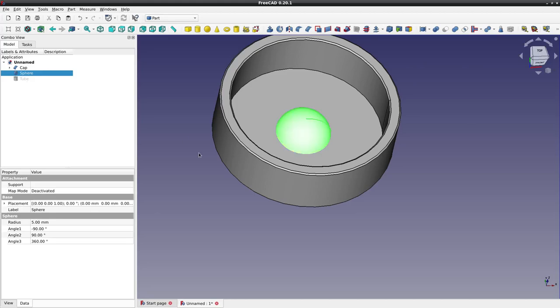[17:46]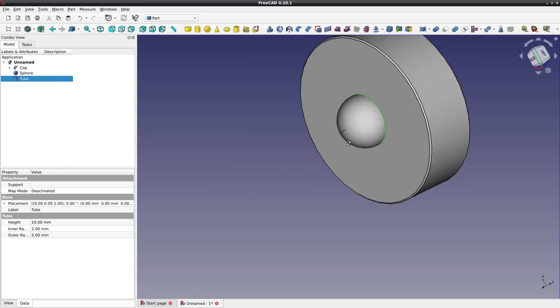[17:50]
See, that's grayed out. If we make some more models, here's a sphere, and we can gray that one out. There's a ready-made tube. Gray that one out. So they're all grayed out, but they all exist. So here's the cap. I made it visible with the space bar. Here's the sphere. Again, made it visible with the space bar. And here's the tube. They all exist.
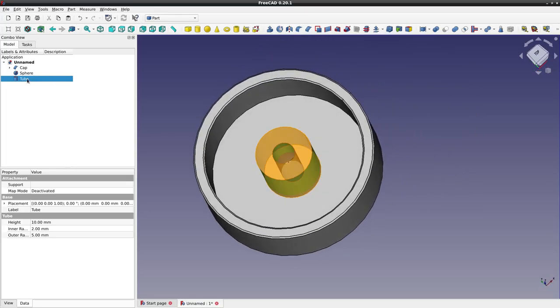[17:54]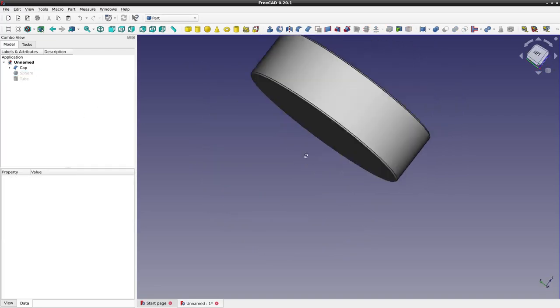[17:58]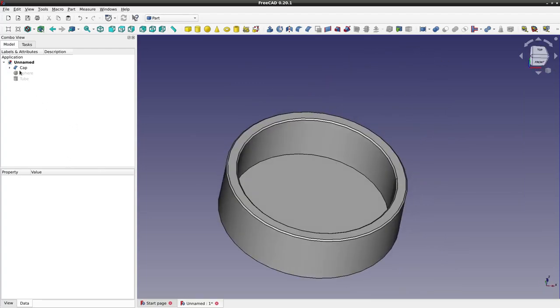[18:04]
But it's confusing to have lots of models visible all the time. So it's useful to only let one show at any one time. And that's what I do with my PUMA microscope models. There are many, many, many models, but only one of them is visible when you open up the file. Just use the space bar to toggle things visible and invisible. So hopefully this will make the following demonstrations more intelligible.
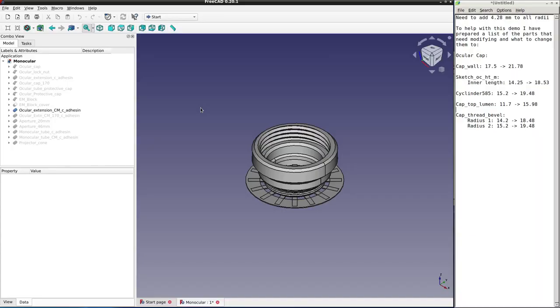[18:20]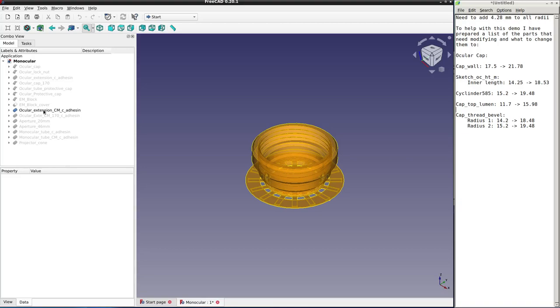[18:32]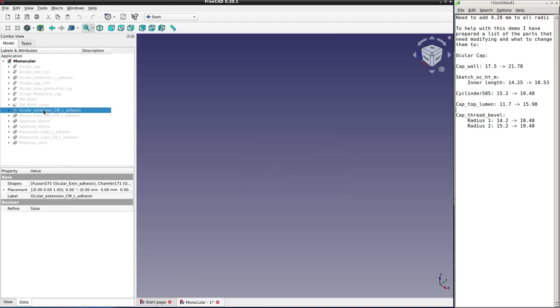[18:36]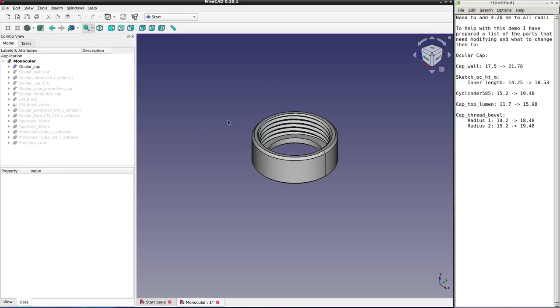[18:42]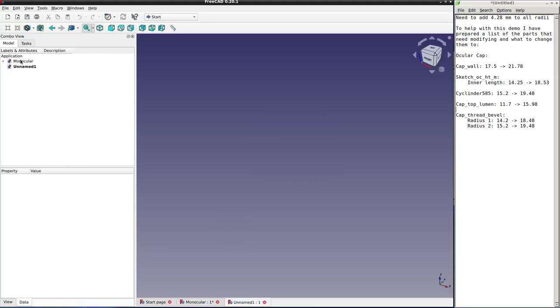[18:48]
Now we've opened the FreeCAD file of the monocular parts in FreeCAD, and we want to edit this model here, Ocular Cap. Notice it's grayed out, you can't see it. What you're seeing is the C-mount extension. We can make that invisible by selecting it and clicking the spacebar. Then we'll select the ocular cap and press the spacebar, make it visible. And we're not going to make the changes in the original file. We're going to make a new document by clicking this button here, and we'll make the changes in a copy.
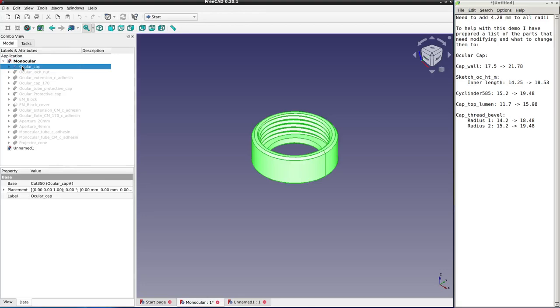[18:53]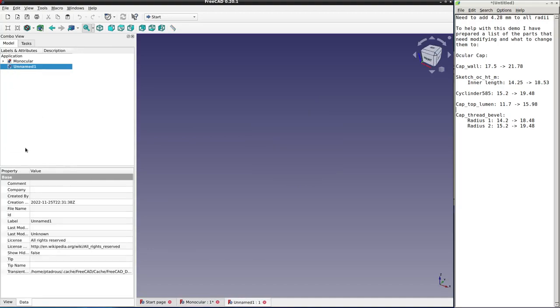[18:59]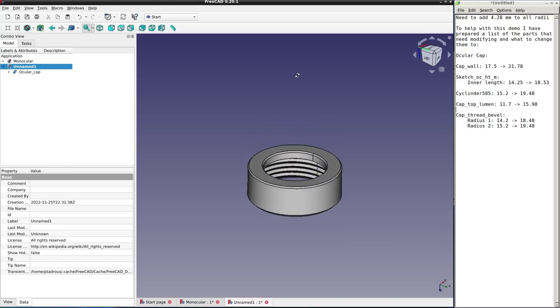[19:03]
So we'll go back to the monocular, we'll select the ocular cap, we'll do Control C to make a copy, say OK. Then we'll go to our unnamed new file, and we'll do a Control V to bring it into the new file. So here's a copy we're going to edit. This is what it looks like on the microscope. You were seeing it upside down before, because that's the way I print it.
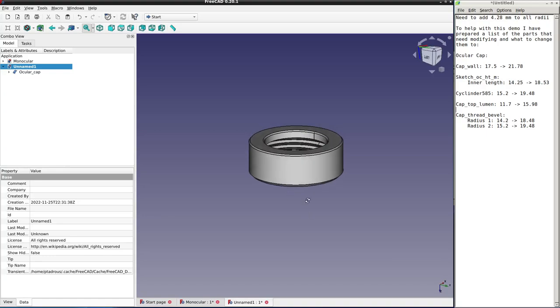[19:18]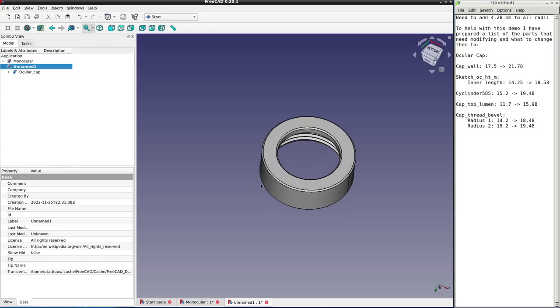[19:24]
And we're going to change this model, but the edits that we're going to make will mess up the order of the edges. And so these chamfered edges will no longer be chamfered if we make everything in situ. The edges, those chamfers will exist, but they'll exist in other edges we don't want chamfered. So first, we must delete the chamfer operation. But before we delete it, we will see what edges need to be chamfered and by how much, so we can reapply that later at the end.
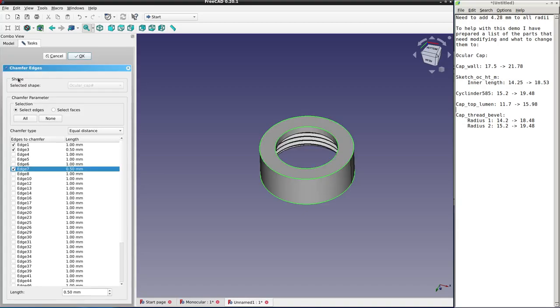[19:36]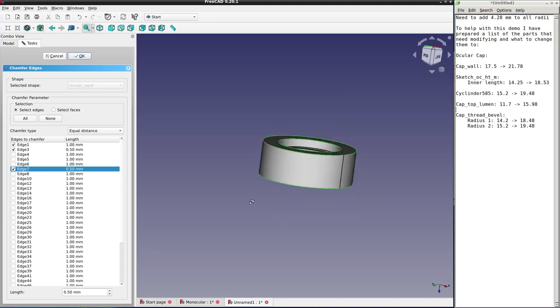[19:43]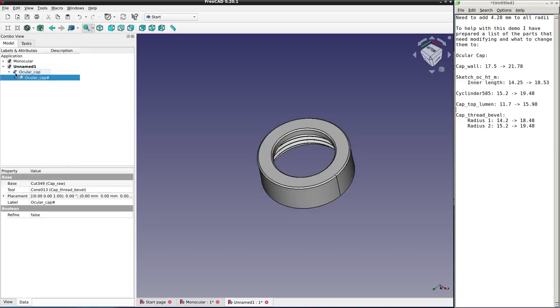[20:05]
So double click on the chamfer operation, and if we double click on any of these edges that we see highlighted in green, those are the ones that are chamfered, we'll see just how much they are chamfered by. So if I click on that one, you'll see it's half a millimeter at the top, and this inner one also half a millimeter, there we are, chamfer, and the bottom one, well, that's chamfered by 1 millimeter. Now, you can write that down if you want. I'll remember it, so I'm not going to do that. We say OK for now. Then we will select the chamfer operation up here and we'll press the delete button on the keyboard. So that gets rid of the chamfer.
Now we can make the changes to the diameters. We're going to add 4.28 to all diameters, and I've made a list here of all the diameters that we're going to change, what we're changing them from, and what we're changing them to. And these are the various parts of the model. So I just made that to make it easier for me to demonstrate this to you.
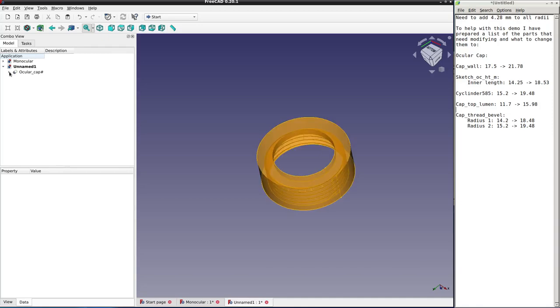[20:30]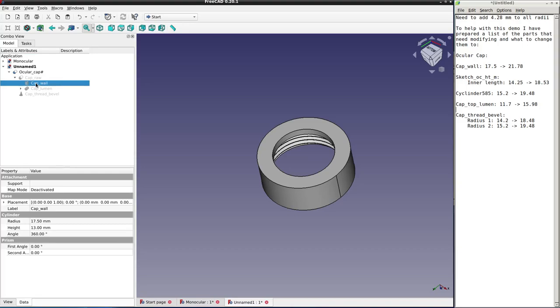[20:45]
So we'll start off with the outermost parts of the model, make those bigger first, because if we make the inner holes bigger, they'll overshoot the solid parts and we'll break the model. So let's open up the model here as I'm doing. And we see we have the cap wall. If we click spacebar on that, we'll superimpose it, and you'll see that's the solid cylinder that forms the outer cap wall. So we definitely want to increase that first.
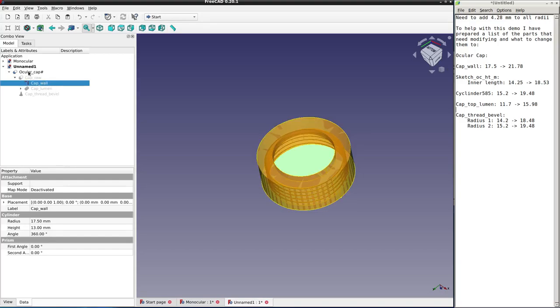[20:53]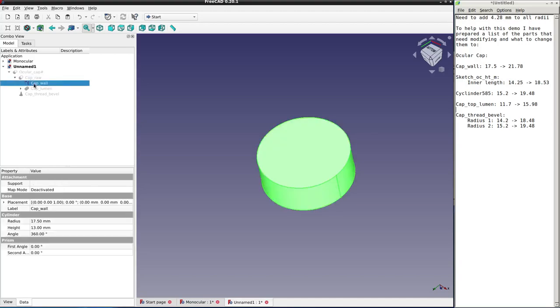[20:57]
So let's get rid of the visibility of the whole model. We'll just keep the visibility of the cap wall. Left click the cap wall model to select it, and we can change the radius down here. Now we're changing it, it says here, from 17.5 to 21.78, because that's what you get when you add 4.28 to 17.5. So we'll do that now. 21.78. So we've made that bigger.
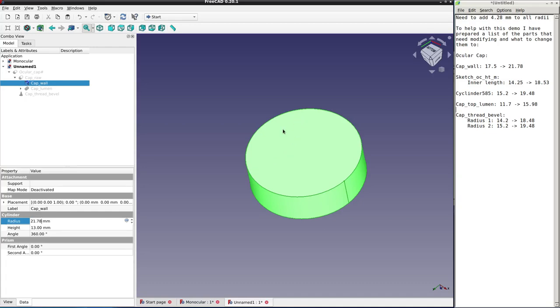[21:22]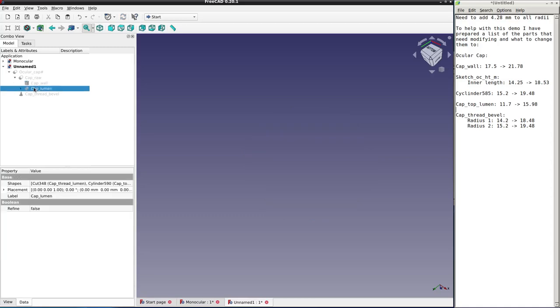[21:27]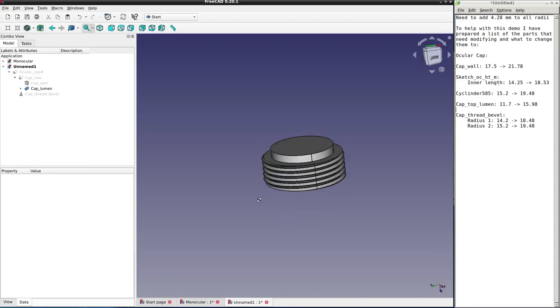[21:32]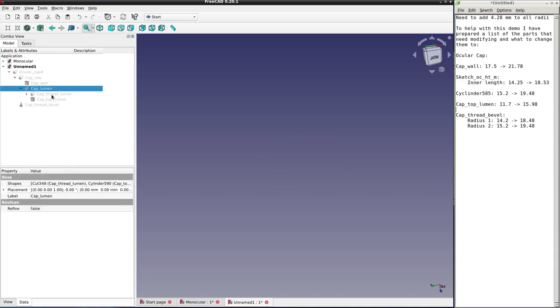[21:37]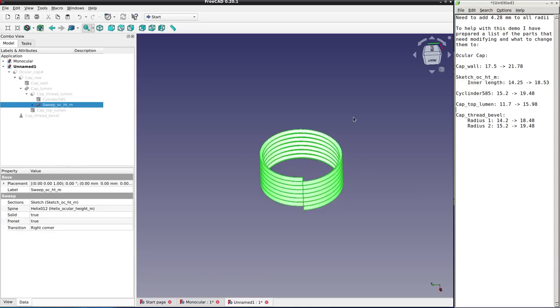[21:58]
Now we can make the cuts bigger. So the cuts here are labeled as lumen, and they are made of two parts, the top part and the thread part. So if we open that out, we'll select each one individually. Cap thread. There we are. And this is a composite, because what we have is a solid cylinder with a helical thread cut into the solid cylinder. So we'll need to increase each of those separately. So this is the solid cylinder. But first, we'll increase the size of this thread cutting shape here.
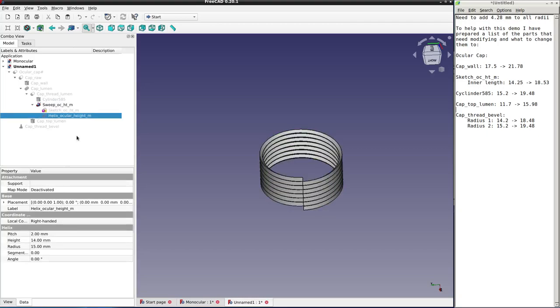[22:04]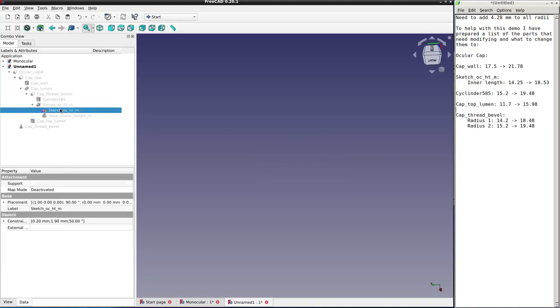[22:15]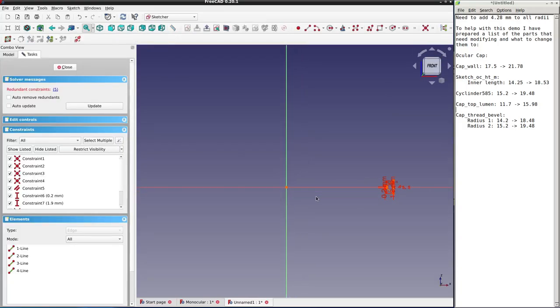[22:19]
And to do that, there are two parts to this. One is the helix. The helix just gives us the angle, the pitch angle of the thread. It doesn't affect the diameter of the thread, so we're not going to change that. What we will change is the sketch. So if we double click on the sketch, you'll open up the sketch editor, and what we want to do is increase the distance of this thread cutting shape from the center point.
Now, we don't have a distance to change at the moment. We need to have a constraint that constrains the distance to a specific amount and then change it, but I didn't make it that way originally. So we'll need to add that constraint. First, we'll get rid of this redundant constraint, it says here. So click on it. This is the one that's redundant. We do a right click with the mouse. We'll do delete. Now we have 1 degree of freedom. We'll use that to make our constraint.
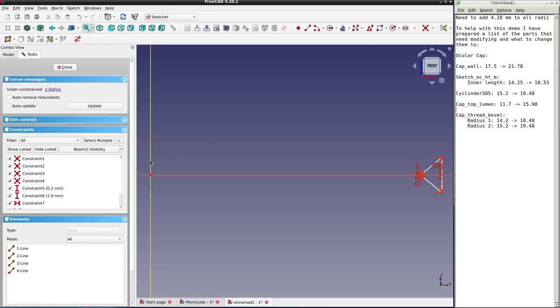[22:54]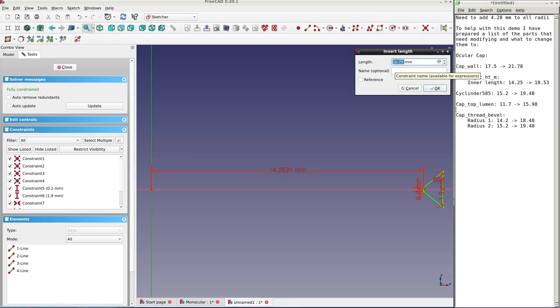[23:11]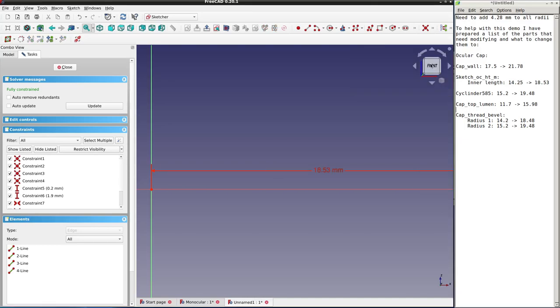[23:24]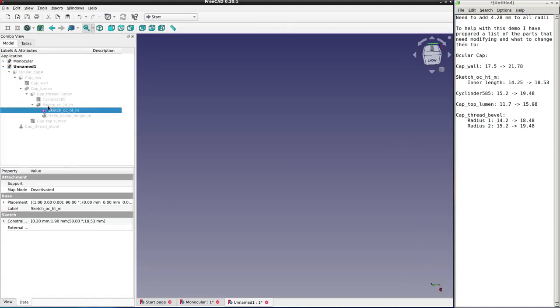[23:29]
So we'll click on the central axis here to highlight it. We'll click on one of these points to highlight it. And now we want to make a distance constraint between that point and the central axis. So we go to our constraints. We'll choose this distance, and you see it's 14.25. We want to change that to 18.53 to make it the correct amount bigger. 18.53. So we've made our thread, enlarged it to the correct amount.
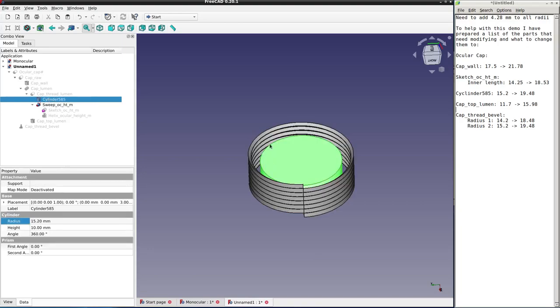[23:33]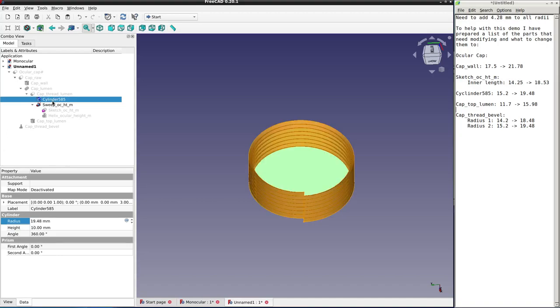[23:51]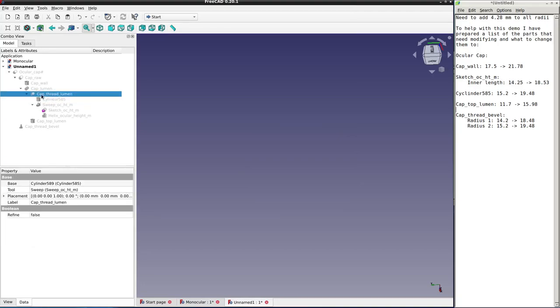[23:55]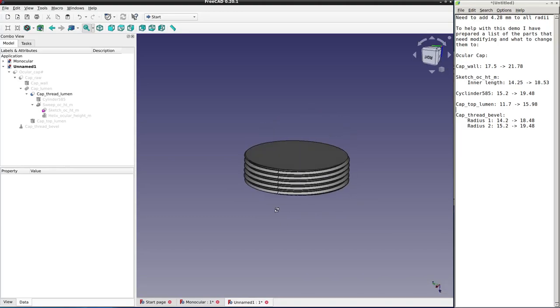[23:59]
So our thread cutting part has been enlarged, but the cylinder is still small. So we select this cylinder, a cylinder 585, and as I said here, we're going from a radius of 15.2 to 19.48. So 19.48. So now they're both enlarged appropriately. We can make them invisible with our spacebar, and we'll see what it looks like altogether. So there we have the enlarged thread with the same pitch angle.
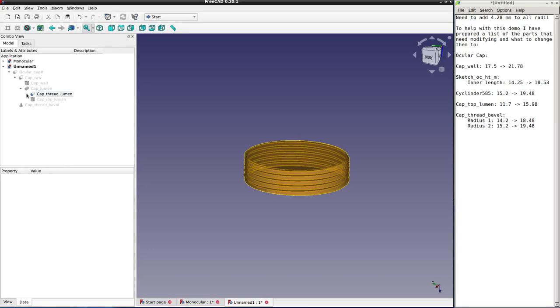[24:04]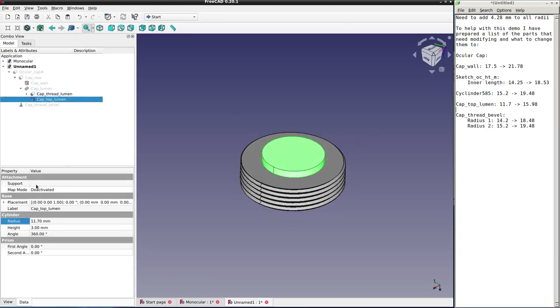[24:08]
Now, we can close that. We've got the cap top now we need to enlarge. So we've selected it. We want to change the cap top from 11.7 to 15.98. So let's do that. 15.98. So now it's appropriately enlarged.
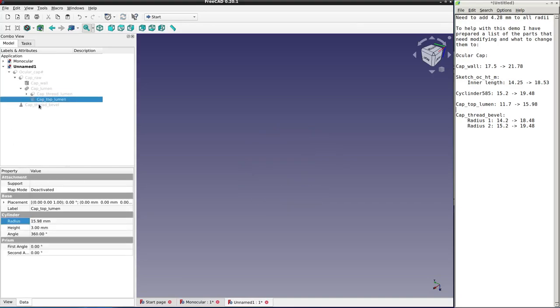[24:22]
And there's one more thing that we need to make bigger, which is the cone that I use to cut into the thread to make it easier to thread on and off the tube. So we need to change the two radii of the cone, the smaller and the larger. We'll change the larger one first, from 15.2 to 19.48. 19.48. There we are. And then the smaller one will go to 18.48. 1 millimeter smaller.
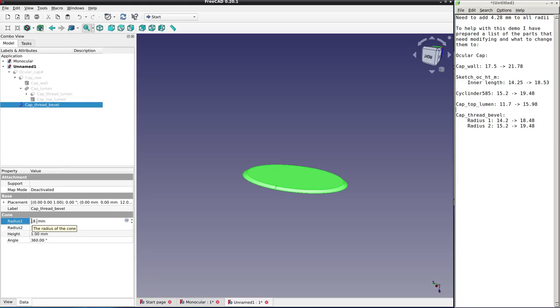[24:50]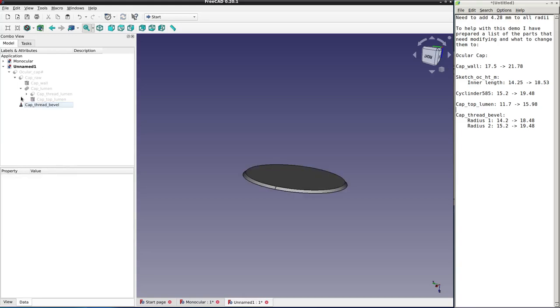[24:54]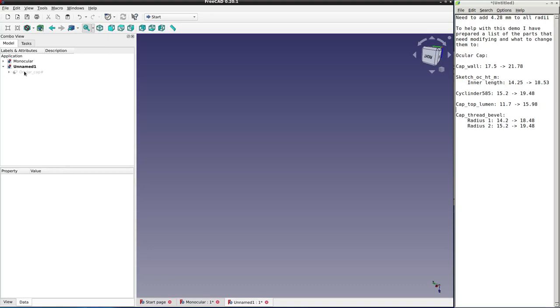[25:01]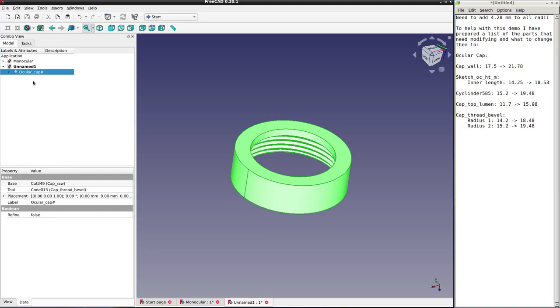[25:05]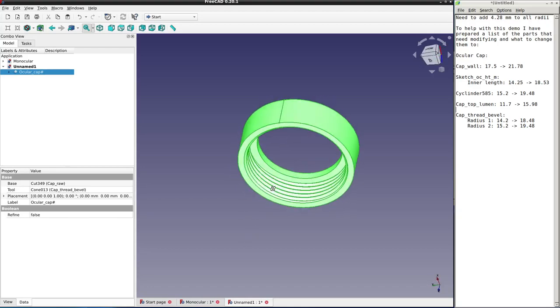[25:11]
18.48. So now we've made the cone appropriately larger. You can spacebar that to make it invisible. And then our overall shape now should be correct. There it is. If for any reason you don't see that, you can just right-click on the shape and do Recompute Object, and that will make sure everything is applied. But we didn't need to in this case.
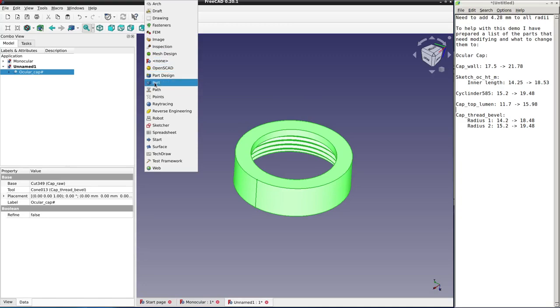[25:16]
So now all we need to do is re-add our chamfer. So we'll go to the Parts Workbench. We've selected the object. We now select the chamfering tool. And then we will chamfer those edges as we saw before. So the bottom edge is 1 millimeter, and there it is. The top two edges have to be 0.5.
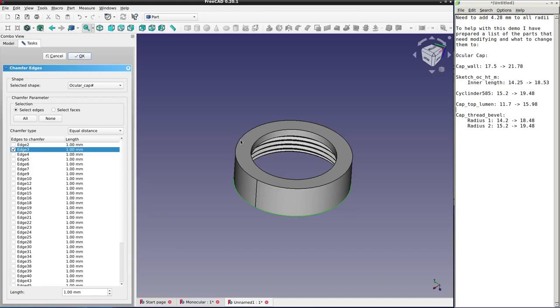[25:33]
So select the edge. I keep missing the edge. That's why you hear that little beep. So there we go, we've got it. 0.5. Let's do that. 0.5. And then the inner one also 0.5. So we'll change it from 1 to 0.5. Okay. And there we are.
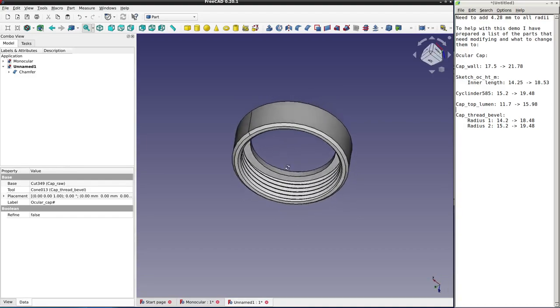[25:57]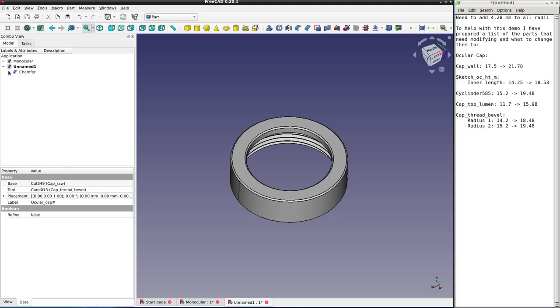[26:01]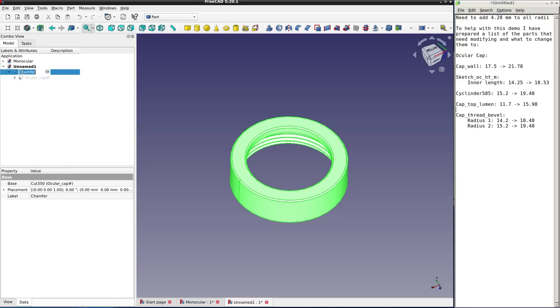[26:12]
So the shape is now correct, but the name is generic. So let's give it the proper name that we want. So we can copy and paste the name. I've selected that sharp name there. I'll do F2 to allow me to edit it. I'll do Control C to copy. Go to the chamfer. F2, Control V to paste. Get rid of the sharp. And rather than just call it Ocular Cap, because it could be confused with the original one, I will now make it Ocular Cap XL, LX, because that's what we made it for.
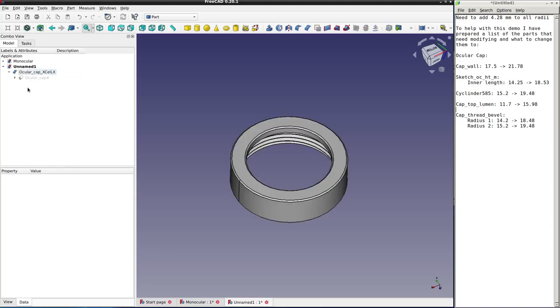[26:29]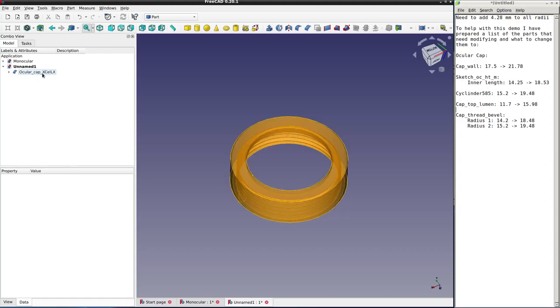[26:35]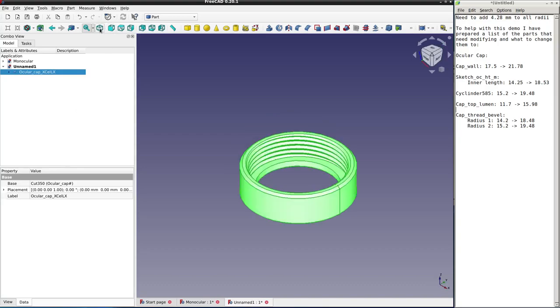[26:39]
Now, the model is done. We need to make the mesh for printing, because that's how I do my printing with STL meshes. So select the model. Let's make sure it's the correct orientation. So I'll click on this button here, which gives us the orientation. That shows that when I export it, it'll be like this. So the bottom part will be on the print bed, which is what I want. Well, it's the top part of the model, but I want that to be on the print bed, so it's upside down. Now we'll go to the mesh design workbench.
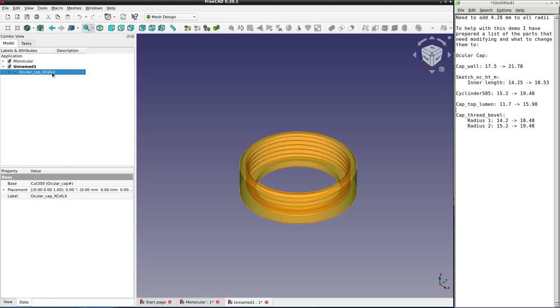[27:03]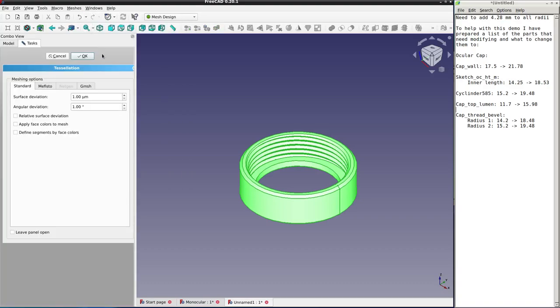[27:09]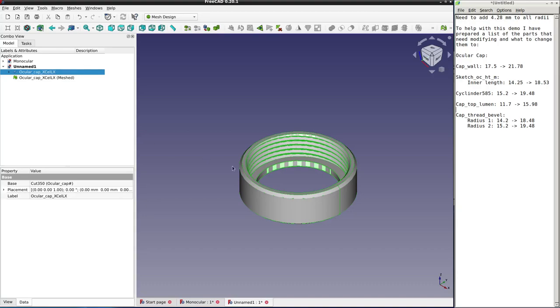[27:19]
And while it's still selected, go to meshes, create mesh from shape. And I use these standard settings for my meshes. Say OK. And after a while, you get your mesh. Now, the mesh is shown here superimposed on the original model. We don't want to see the original model at this stage, so I'll just press the space bar to get rid of the visibility of the original model.
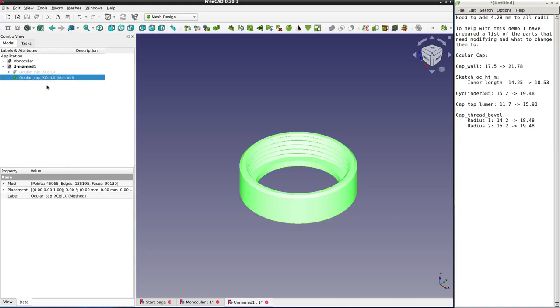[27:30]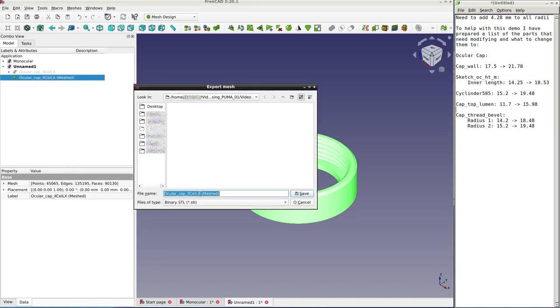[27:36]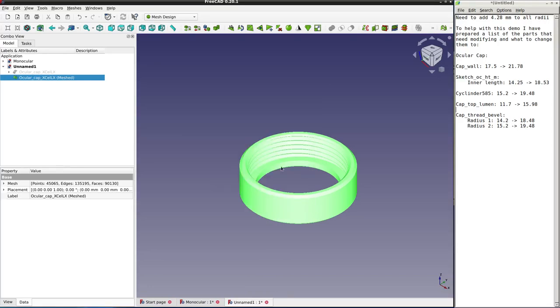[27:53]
Click on the actual mesh itself, right-click, and we can say Export Mesh. I don't want this brackety thing on the file name, so I'll get rid of it. I'm going to save it as an STL, binary STL, but you have a whole range of things here you can save it as if you're into those other things for whatever reason. But I'll use binary STL for printing. I'll say save. And that's that.
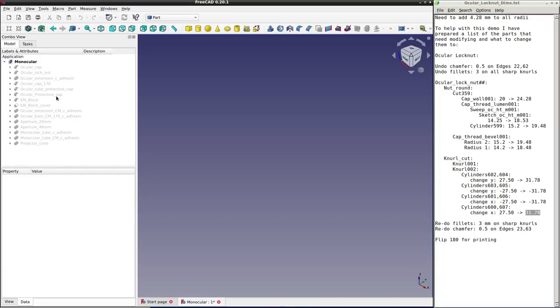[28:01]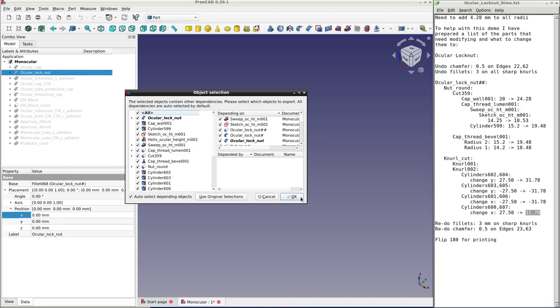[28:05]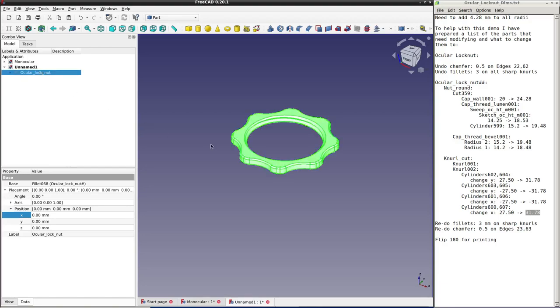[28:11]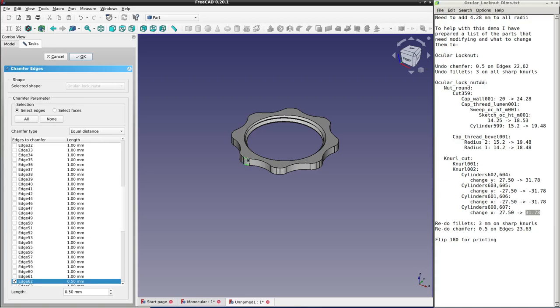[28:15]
Now we'll customize the ocular lock nut in the same way. So do Control C, OK to copy, make a new document, Control V to paste, and there it is. Now before we start, we'll get rid of the chamfer, which has this 0.5 millimeter chamfer on both sides. Select the chamfer, then press delete. And then we'll also get rid of this fillet, which is a 3 millimeter fillet on all these sharp edges. So again, we select it, press delete.
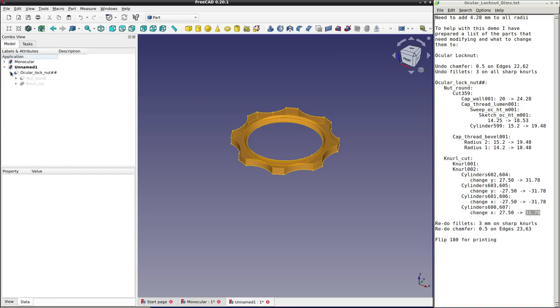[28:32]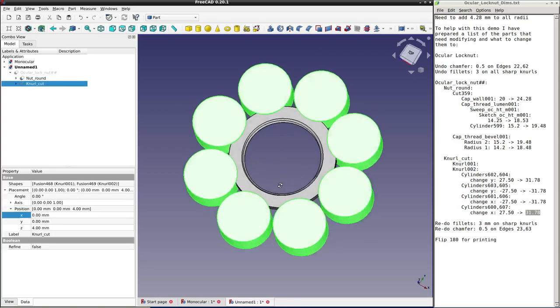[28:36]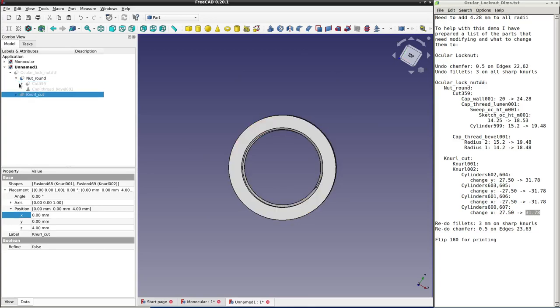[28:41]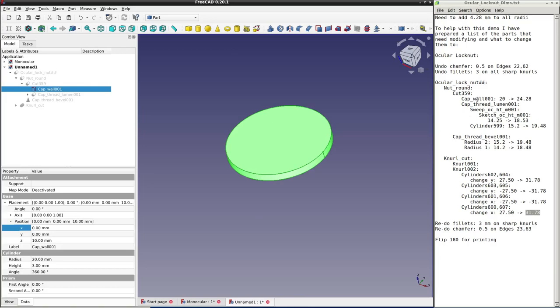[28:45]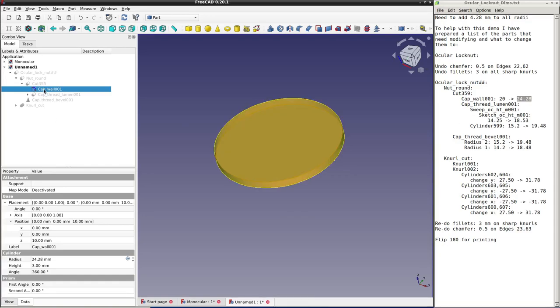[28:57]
Now if you open up this structure, you'll find it's made of two basic things, a round nut and a knurl cut. The knurl cut is made of these cylinders. But we'll concentrate on the round nut to begin with, and the basic shape is this cap wall cylinder, which we're going to increase from a radius of 20 to 24.28. So we're adding 4.28, remember, to all radii. And listen out for when I press the space bar to make things visible and invisible, because I won't say that out loud all the time.
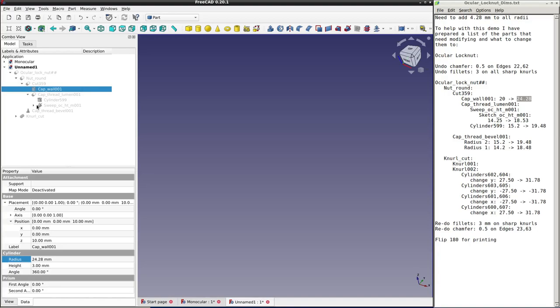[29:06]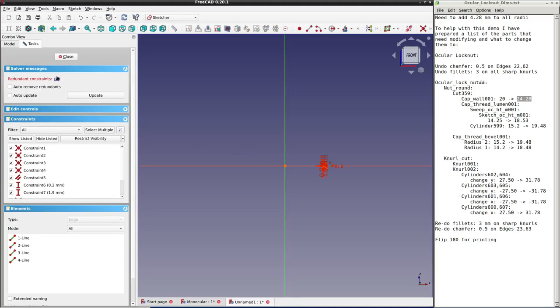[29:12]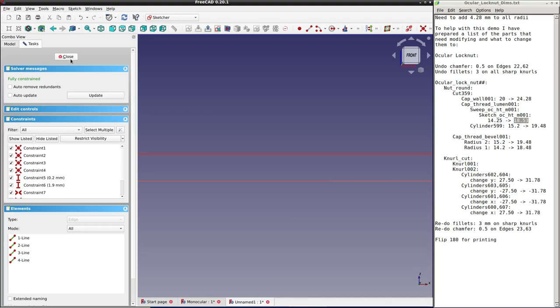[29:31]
Now we'll deal with the thread. This is very similar to what we had before. So first we'll start with the sketch, double click. We'll get rid of this redundant constraint, right click, delete. Now we'll make a new constraint, select the central bar, scroll in with the mouse, select one of these points, get your distance constraint, there it is, change it from 14.25 to 18.53. There we are. Close, that's that done.
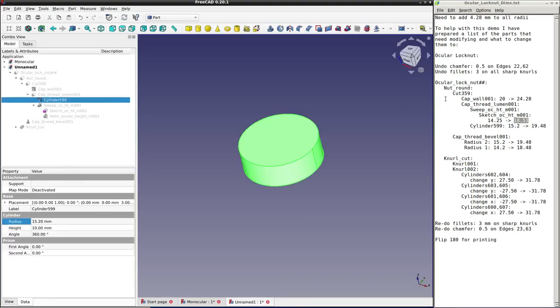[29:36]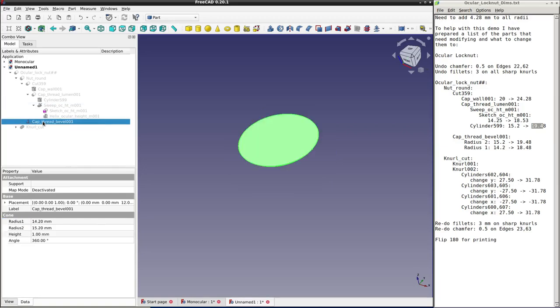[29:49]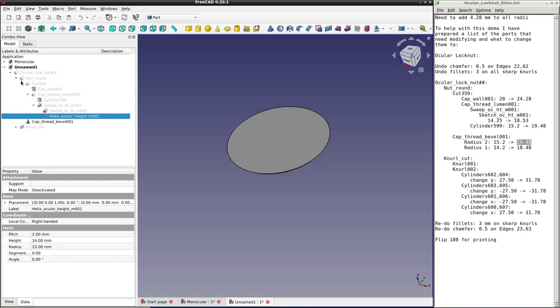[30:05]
And then we have a solid part to this, which is the inner cylinder. Now we're going to increase that radius from 15.2 to 19.48. And before we finish with the threaded part, we're going to change the bevel, which is a cone. The larger radius is going to expand from 15.2 to 19.48, and the smaller radius is 1 millimeter smaller, so it's 18.48. So that's dealt with the basic nut shape, and if we collapse everything back,
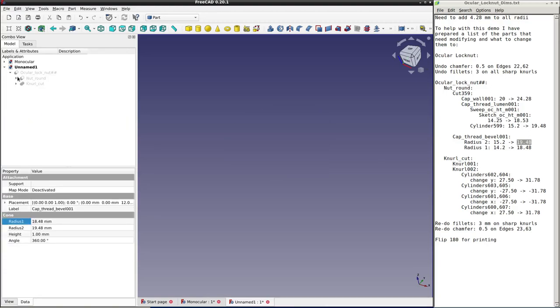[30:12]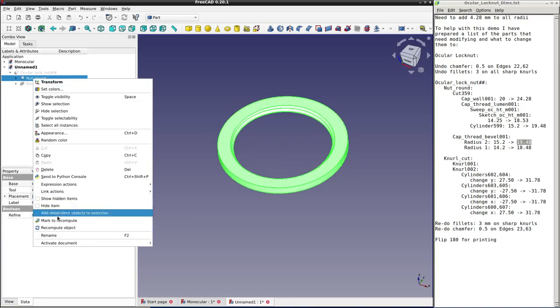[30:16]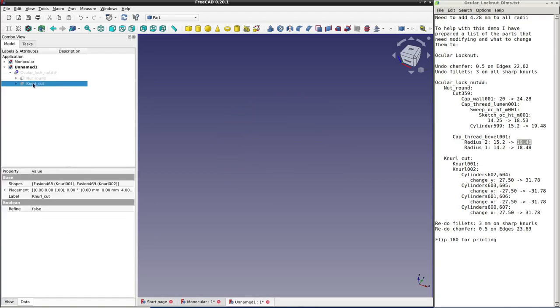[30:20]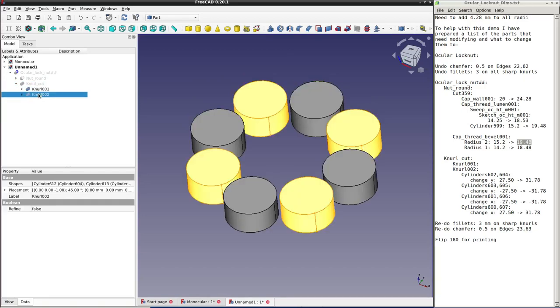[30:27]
I left it visible, so just spacebar. Collapse everything back, there we are, and just in case anything wasn't updated, you can do a recompute object, but everything was fine there. So now we'll go to the knurl cut, and this is made of two sets of cylinders, which are rotated relative to one another.
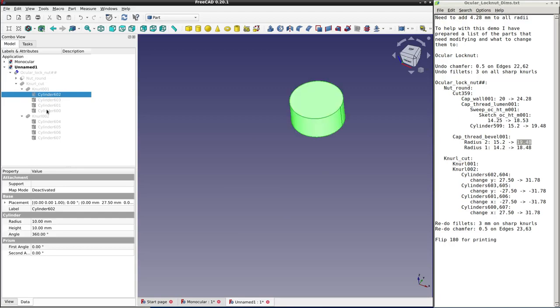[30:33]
They're essentially copies of each other, and that means we can actually edit two cylinders at once. So to select both cylinders, we do a control and select. And so these cylinders, we're going to change the Y position, because we don't change the radii. We're not changing the radii of these. We're changing their position from the center of the plane. So we'll go to placement, position, the Y value we're changing here from 27.5 to 31.78.
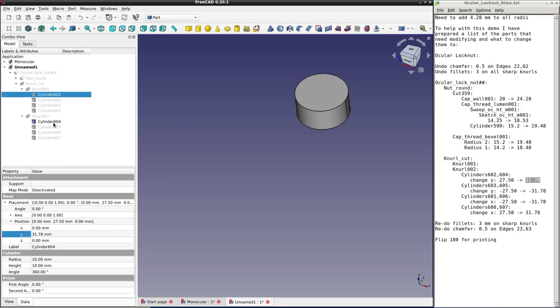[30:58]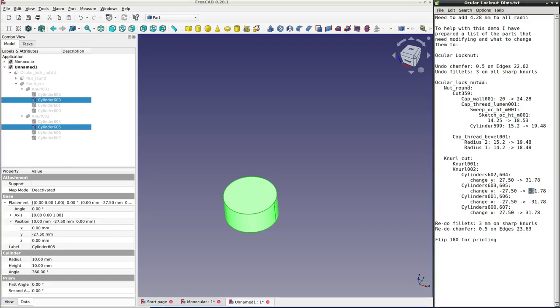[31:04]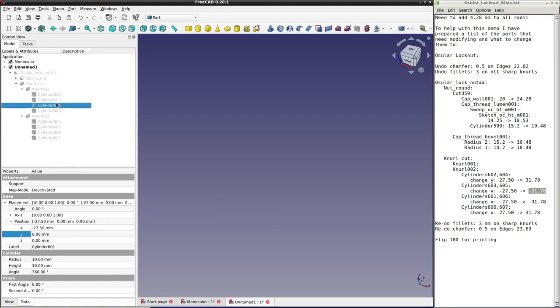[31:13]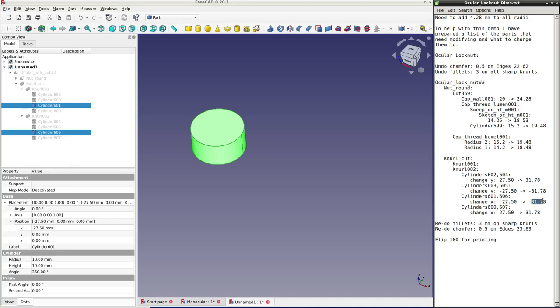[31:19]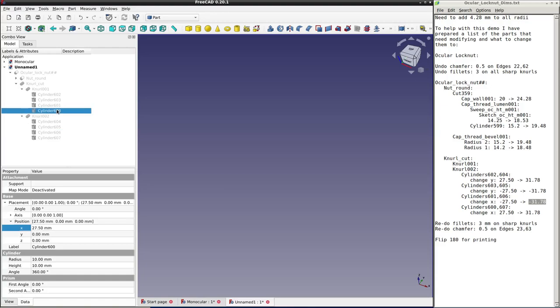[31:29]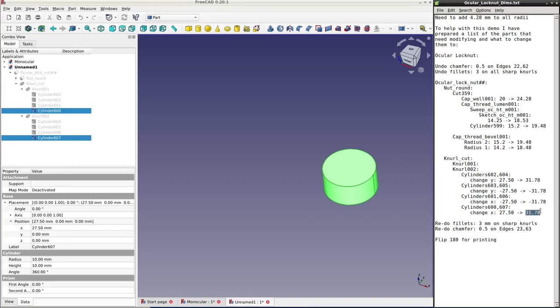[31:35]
Now we'll go to the next pair, 603, 605, and we'll change their Y value from minus 27.5 to minus 31.78. And then we'll go to the next pair, where we'll change the X position for these two from minus 27.5 to minus 31.78. Control C, control V. And then finally, these two, we'll also change the X, this time in the positive, from 27.5 to 31.78. So that's all done.
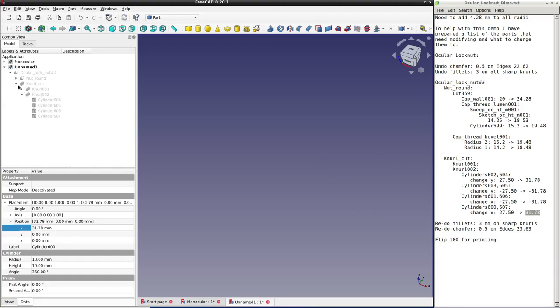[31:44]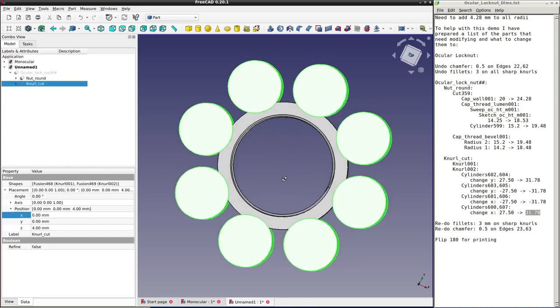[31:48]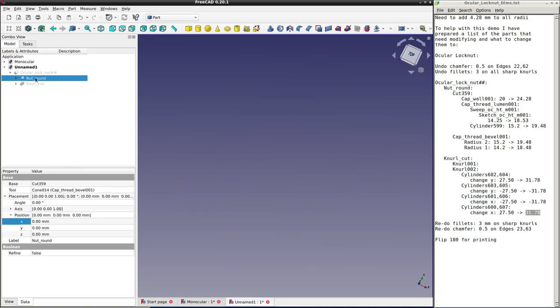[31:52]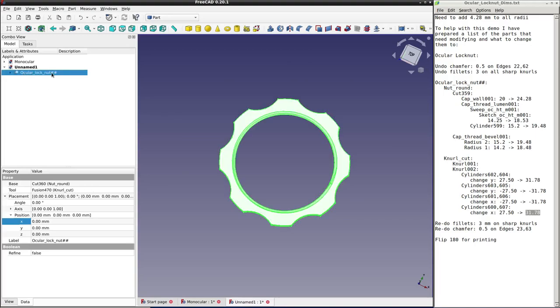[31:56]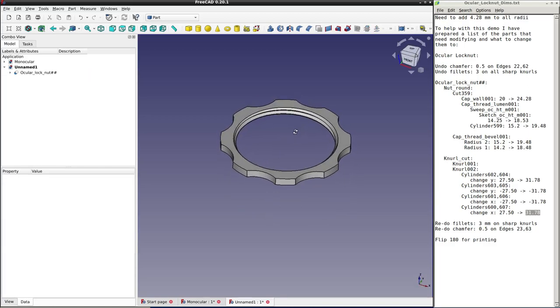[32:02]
So now we've fixed the knurl and the basic nut, so everything is in the correct proportions. Let's go now to the cut, which we didn't undo, so it should still be there. Now let's make sure this has all been applied. Recompute object, yes it has. So this is now the bigger version. Now we can reapply the smoothing of the edges.
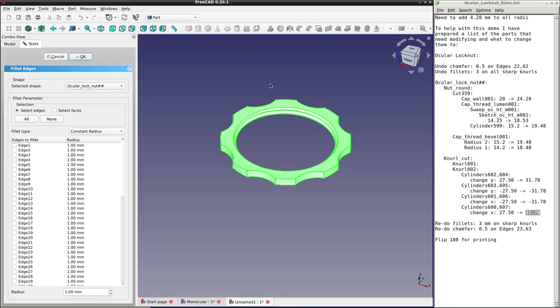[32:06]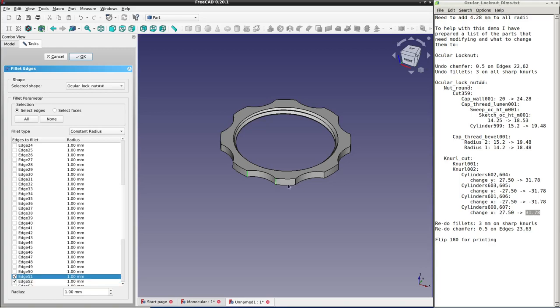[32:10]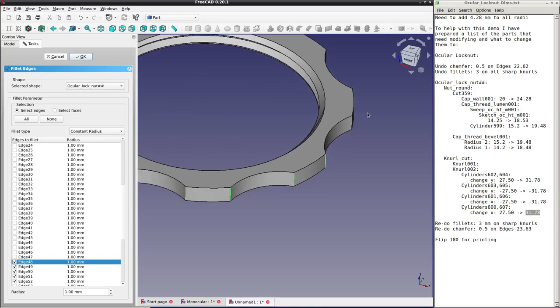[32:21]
The first thing that we need to do is smooth these parts with our fillet. Remember, this was a 3 millimeter fillet. So I'm just going to select all the edges. It can be a bit fiddly. You can always zoom in to help if you keep missing edges like I do. That one, that one.
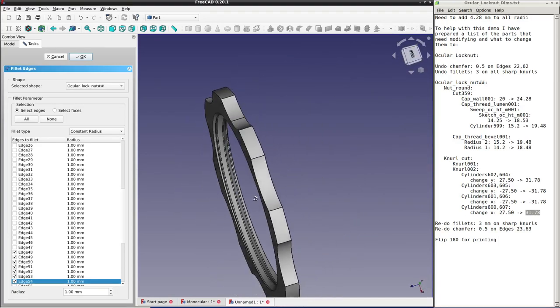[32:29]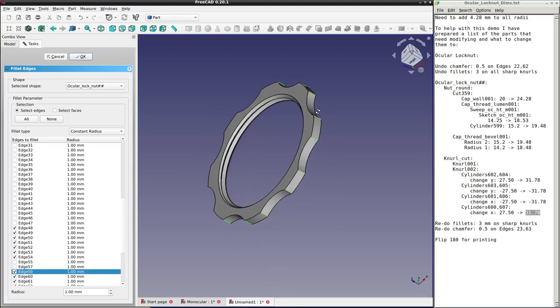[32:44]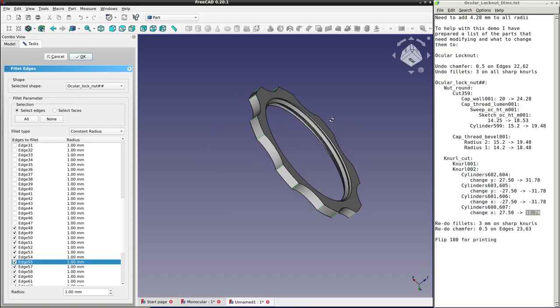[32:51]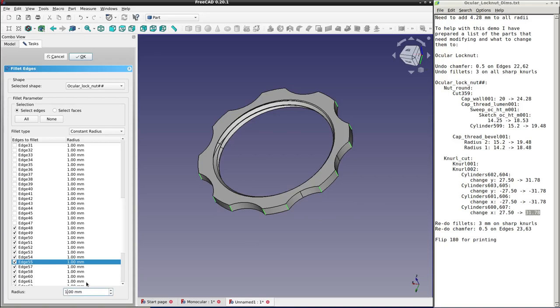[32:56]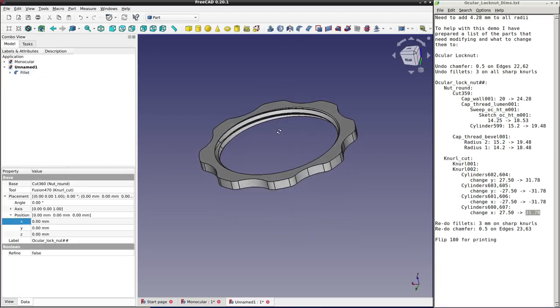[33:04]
Once we have selected them all, we'll make sure they're all selected, and then we'll change the default value of the fillet from 1 to 3. So have I missed any? Yes, I have. Here are a couple. So now all those edges, I seem to have got them all now. So now we'll change this from 1 to 3. You can see it's applied it to everything. Say OK. Okay, that's all smoothed out.
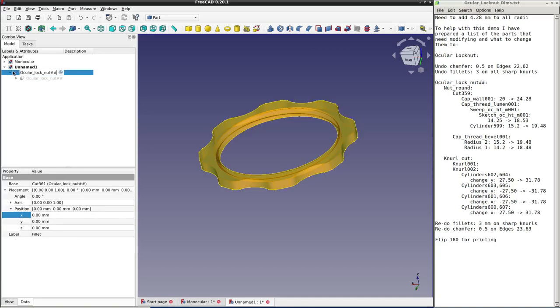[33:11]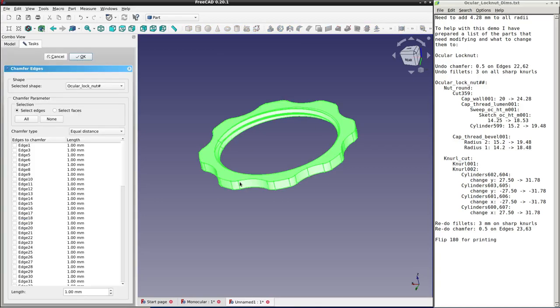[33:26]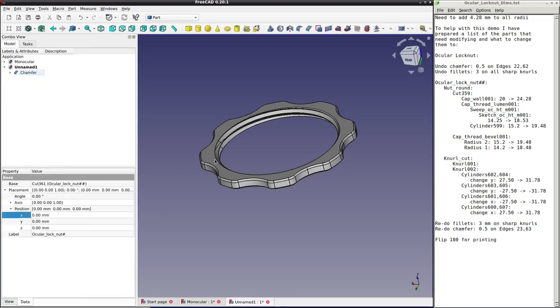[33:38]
We'll change the name. F2, Control C, F2, Control V. Get rid of one of the sharps. I missed that. That's why I added a 001 to it for me. Now on this, we'll add the final chamfer, which was, remember, 0.5. And you only need to do this for two of the edges. Put in the 0.5 here, and it will change it on all the applied edges. And then that propagates all the way around. So now that's done.
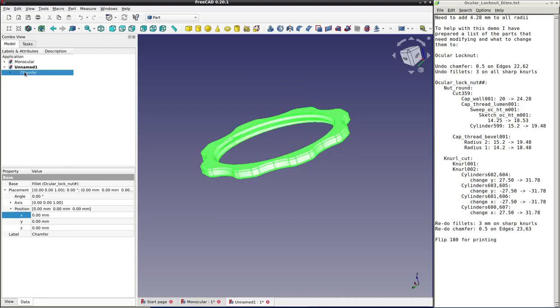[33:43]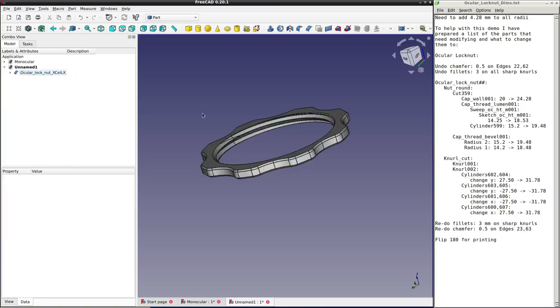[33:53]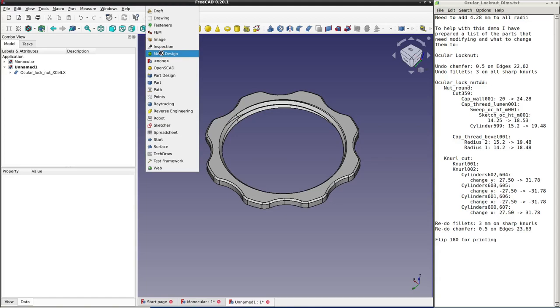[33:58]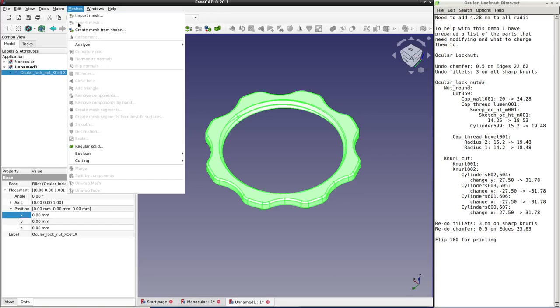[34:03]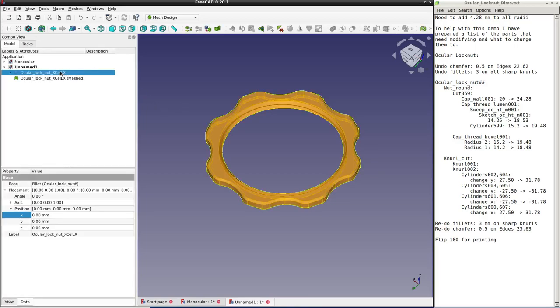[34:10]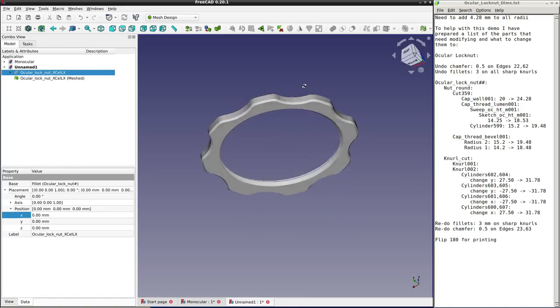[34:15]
We'll change the name. And this time, we're not going to leave it as Locknut. We'll now call it XCelLX. And that's done. Now all that's left to do is turn it into a mesh, export it as STL, and print it. So you've seen this on the previous one. What I want to make sure on this one, and we'll do that in a second, is this is the part with the cone added to it, and this is the part that didn't have the cone added to it.
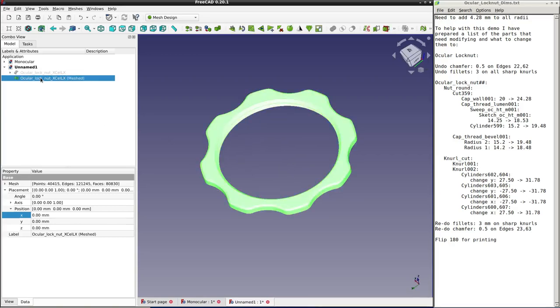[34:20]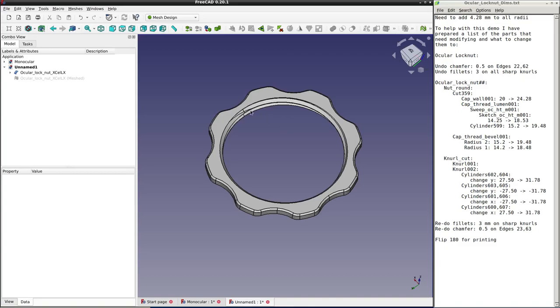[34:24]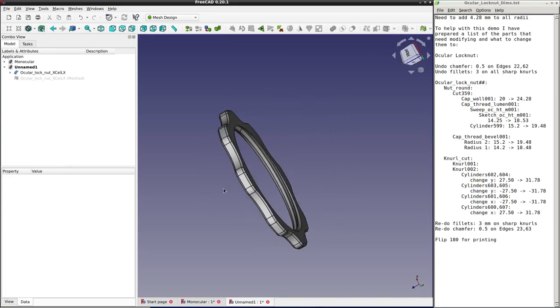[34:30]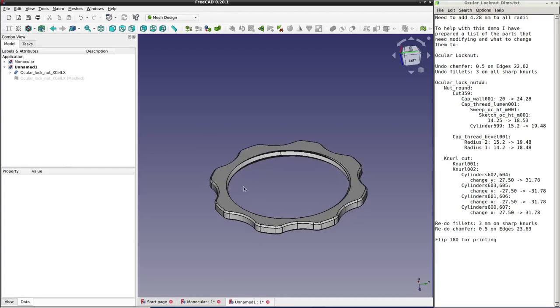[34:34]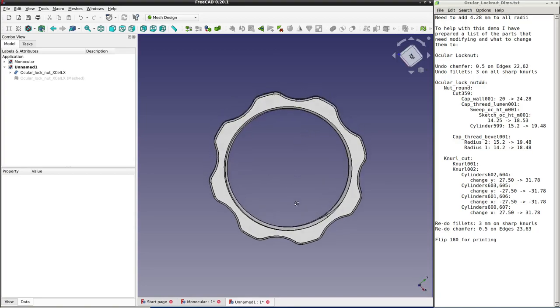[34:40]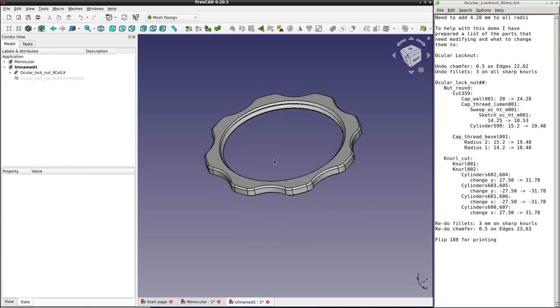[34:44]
And we can tell that if we just show the model. You see it has this longer diagonal line, so that indicates where I cut the cone out, and I want that part to be on the print bed, because it gives us more leeway to deal with any elephant footing. So let's see if that's correct. And actually, no, it's not correct. So that part with the big diagonal is on the top, and I don't want that.
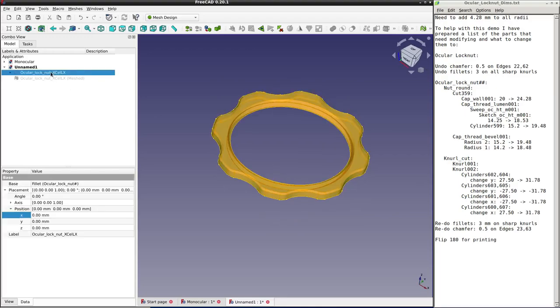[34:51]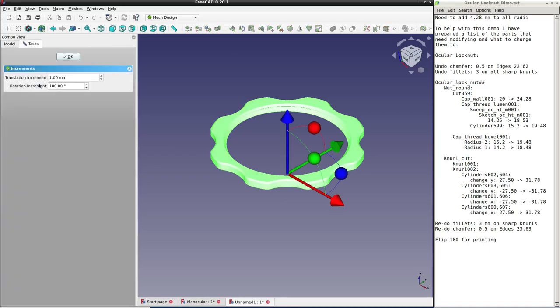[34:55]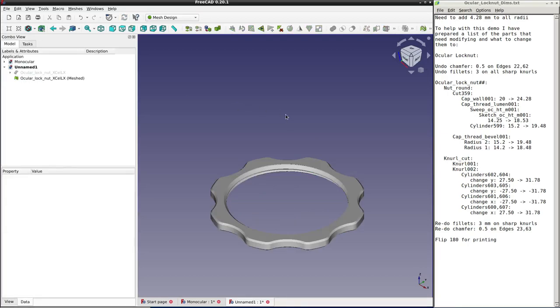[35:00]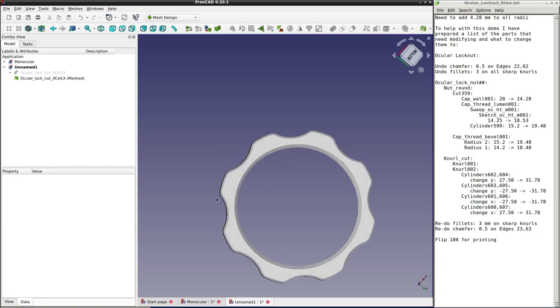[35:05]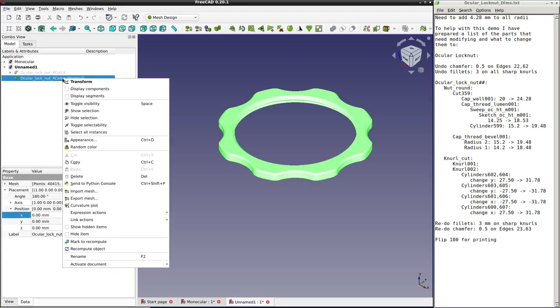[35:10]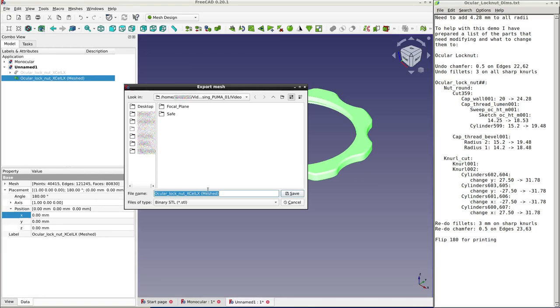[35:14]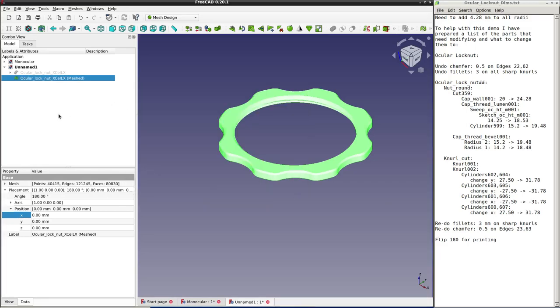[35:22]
So what I'll do, I'll need to flip the model. I'll do that with the actual mesh this time. So right click, transform, 180 degrees. There we are. So that's the correct orientation that I wanted on the print bed, with the larger cone cut part on the print bed. So now we can export that. Right click on the mesh. We say export mesh. Get rid of the brackety bit. I'm exporting it as a binary STL. And that's that.
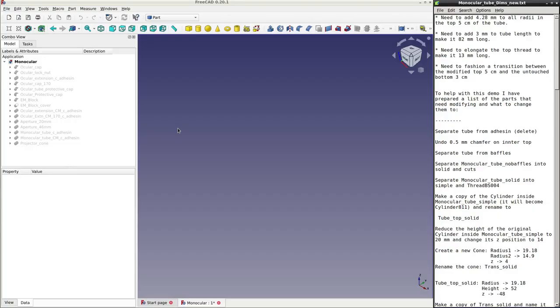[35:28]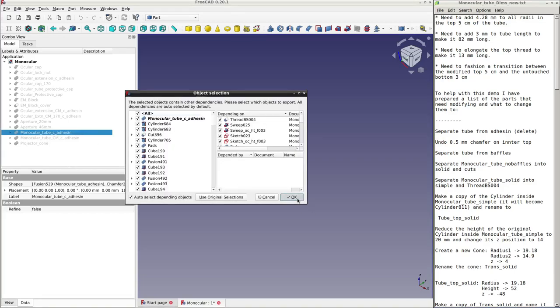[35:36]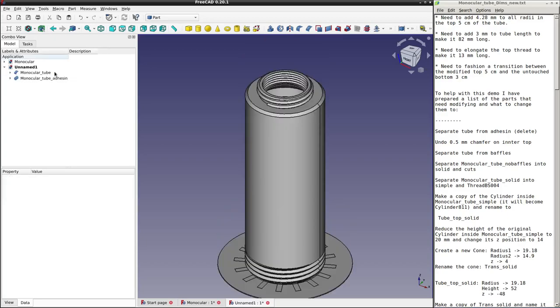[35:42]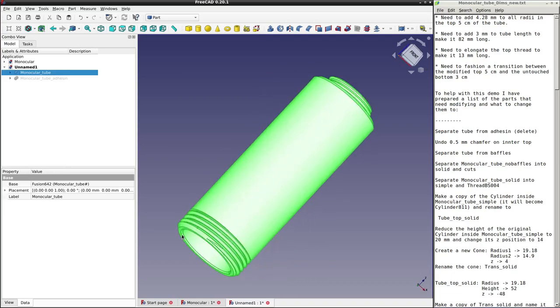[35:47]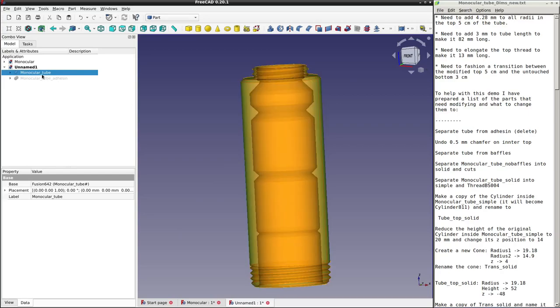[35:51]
So now we'll edit the monocular tube itself. And these are our four goals that we need to achieve. So we select the tube, Control C to copy, say OK. New document, Control V. We'll separate out the tube from its adhesin. We'll come back to the adhesin later. This chamfer on the bottom, 0.5 millimeter chamfer, it's not going to survive all the changes we're doing, so we'll have to add it back at the end.
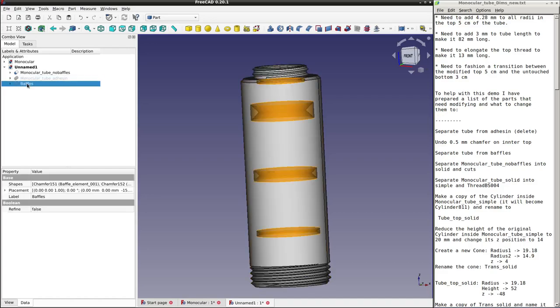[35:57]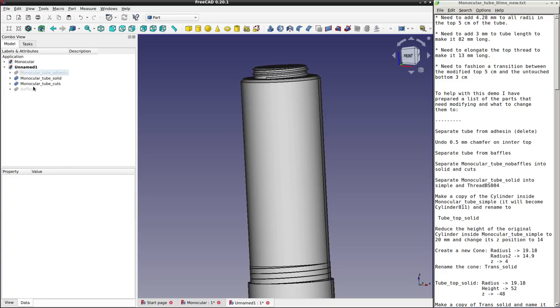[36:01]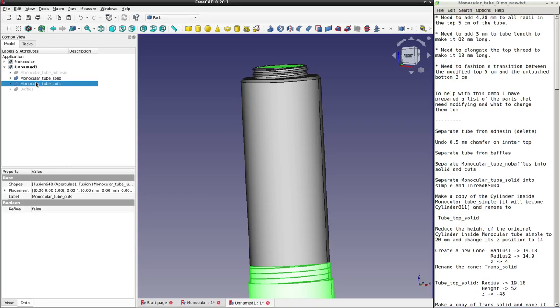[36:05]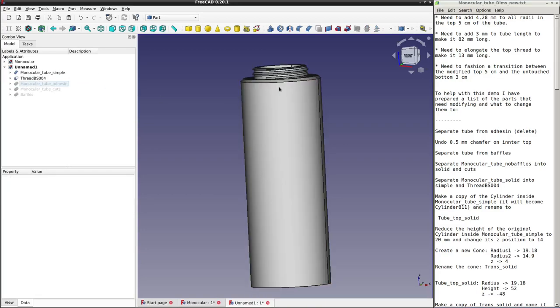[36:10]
So select, delete. And let's open up the tube into its baffles part and the part without baffles. We'll come back to the baffles later. Select the other part, delete to separate out in the solid and cuts. Come back to the cuts later. So solid, press delete again. Into its component parts now, we have the thread and basic tube.
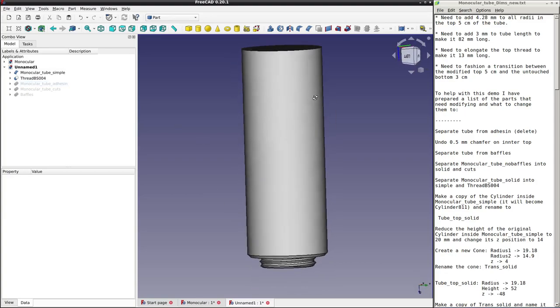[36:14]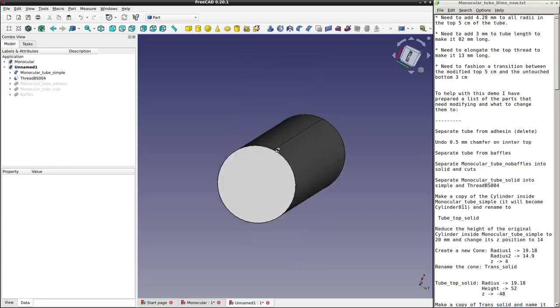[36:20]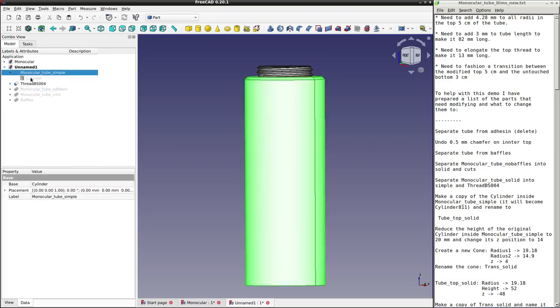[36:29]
In the microscope, it's like this. The thread goes to the filter block, and this is the basic monocular tube. Now we're going to split this up because we're going to make an expanded portion, a transitional portion, and an unaltered portion. So if we open up this chamfer, the basic cylinder is in here. Let's make a copy of it because we'll use the copy. Control C, Control V. We'll use this copy to make the expanded top part of the tube later.
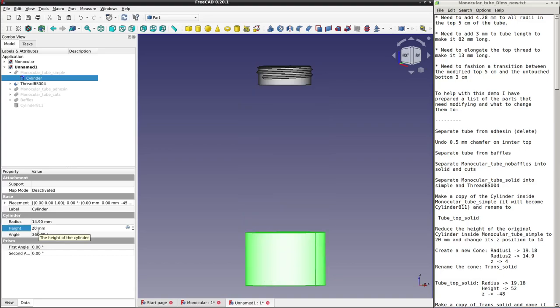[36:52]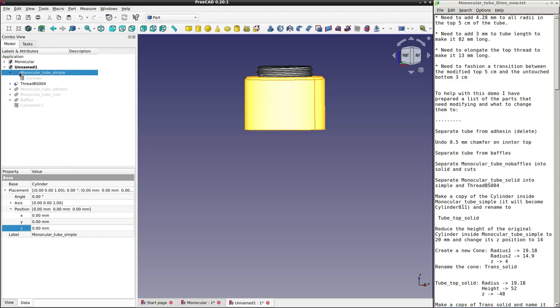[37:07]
First, let's concentrate on the unaltered part. So that's this part here. We're going to shrink this down from its original 79 millimeters, which was the total length of the tube. Now it's only going to be a short portion that's going to be left unaltered. So we're going to make this 20 millimeters, but you see it shrunk in the wrong direction for us now. So we'll go to placement and position, and we need to change the Z offset to put it back where it needs to be, from minus 45 to plus 14. Okay, so we've done the unaltered portion, that's dealt with.
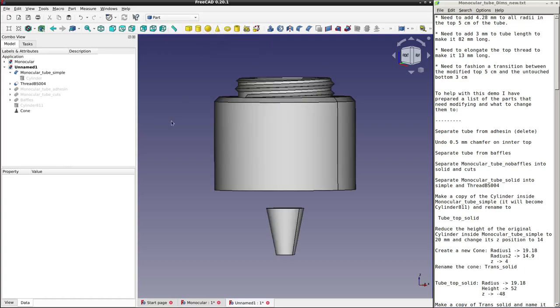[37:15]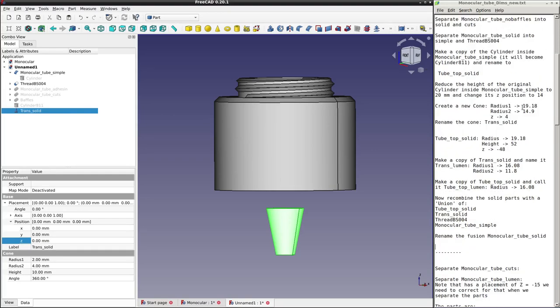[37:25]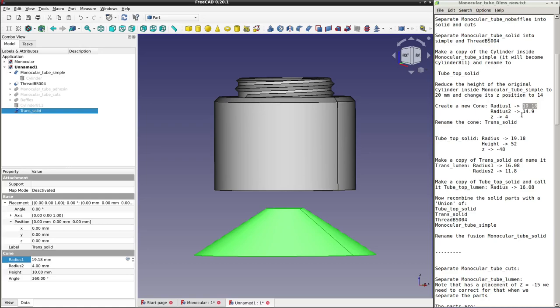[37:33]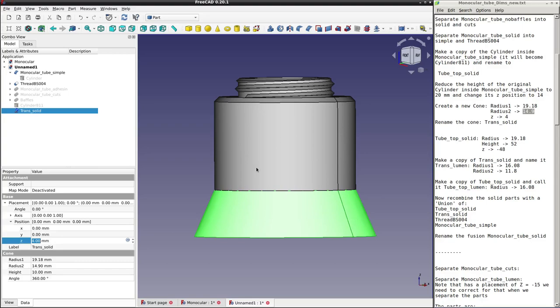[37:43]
Now we need a transition. So we'll go to our part workbench, we're here already, and we'll select a cone that we're going to use to make a transition. So let's call this F2 trans solid, and let's change its radii. So the new expanded radius is going to be this one, 19.18. So radius 1, 19.18. And the original radius, 14.9. So that'll be the other end, radius 2, 14.9. And it's offset here, so we need to change the Z offset. There we are. So now we've got our unaltered part, we've got our transition part.
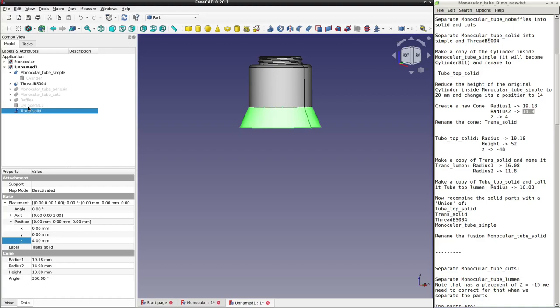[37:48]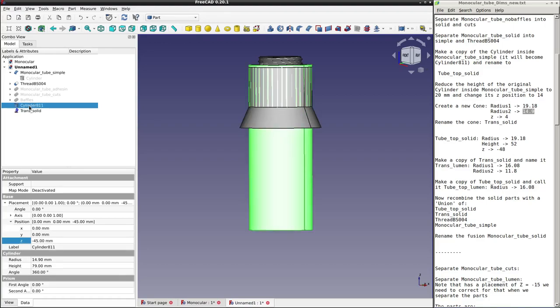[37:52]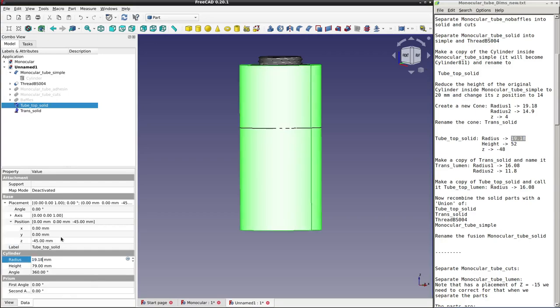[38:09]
Now we need to do the expanded part that accepts the new eyepiece. So let's use the copy that we've made there. Let's do F2. We'll change this name to tube top solid. And we'll change its radius, 19.18, the new expanded radius. But we also need to change the length, because the top part here, or the part near the filter block, is being dealt with. So this is only the part that's going to be near the eyepiece.
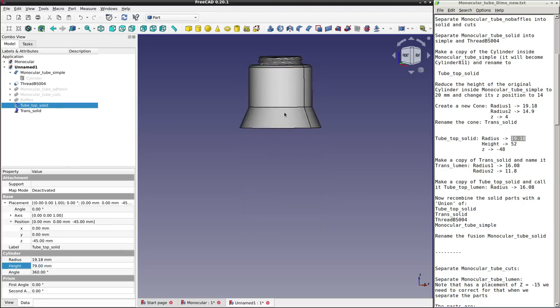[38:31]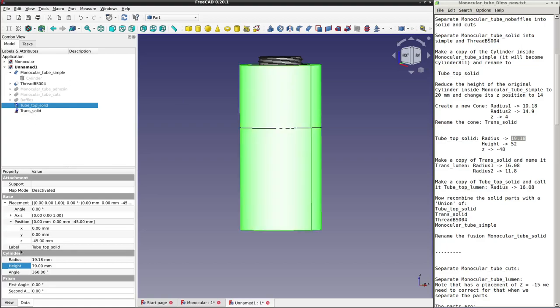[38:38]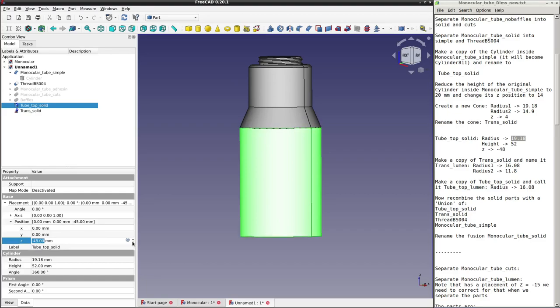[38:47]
So we're going to change it to a number that, when you add it to the other parts, will make a total of 82. Now we've got 20 millimeters for the unaltered part, we've got 10 millimeters for the transition, so that's 30 millimeters, so you need to add another 52 millimeters. So that's what the length is going to be, 52 millimeters. But you see it's partly overlapping here, so again we need to offset it in Z. 1, 2, 3. So that is what makes the new tube 3 millimeters longer than the original one.
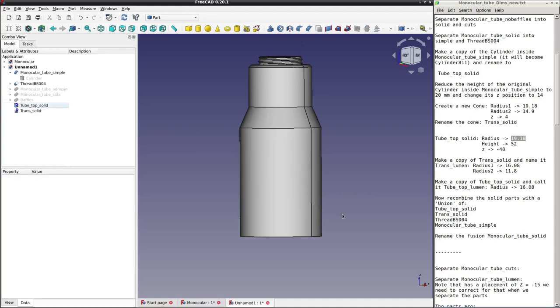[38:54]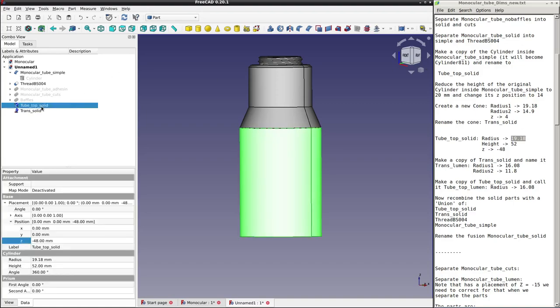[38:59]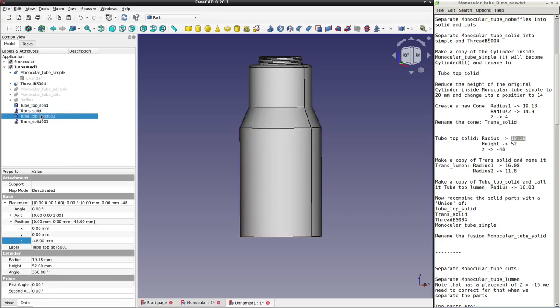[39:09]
Now, before we put this all back together again as the new solid component, let's make copies of this tube top solid, Control C, Control V, and the transition, Control C, Control V, because it's easier for us to do it this way than to do it later when we're making the internal components. We'll use these copies as the internal components for those new parts. So change the name of the tube top solid copy to tube top lumen, and change the name of trans solid copy to trans lumen. And now we need to change the diameters to make them smaller, because these are going to be the internal counterparts.
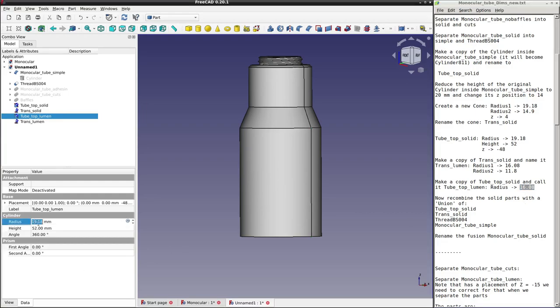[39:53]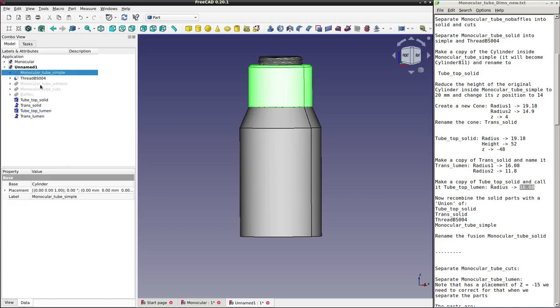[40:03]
So trans lumen radius 1, 16.08, and radius 2, 11.8. Control C, select Control V. And as for the tube, that will be 16.08. Control C. Control V. So these are now ready to use for our internal parts. We can leave them for now and just take all our solid parts and put them back together. So select with your finger on the control button of the keyboard. So select multiple things.
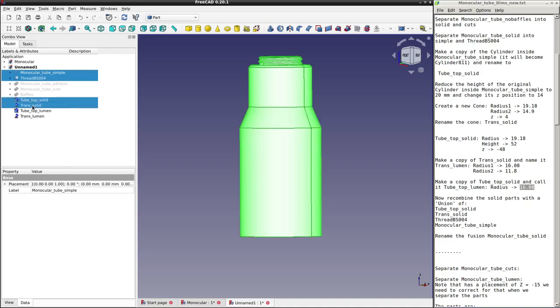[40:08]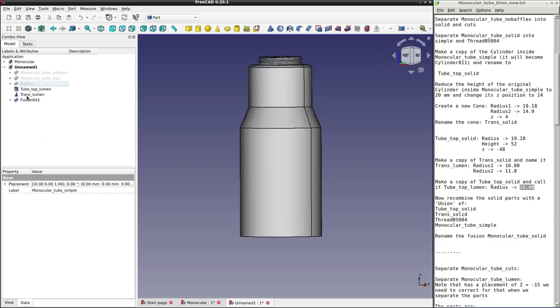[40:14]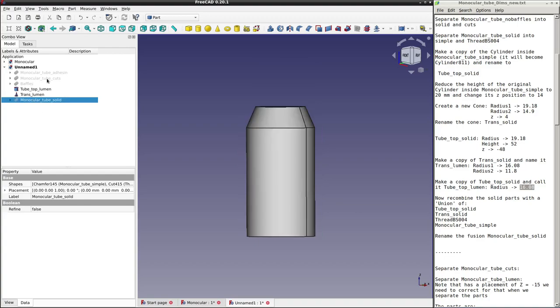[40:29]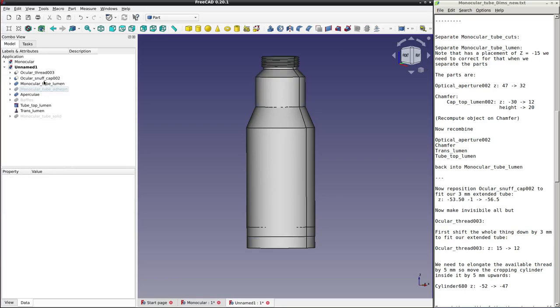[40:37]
Now we come to our operations here. We select the union operation. That'll give us a fusion of those parts. And we will change the name to monocular tube solid. So this is our new version of monocular tube solid. Now we can turn our attention to the cuts. So the cuts are here. Press delete. That will split them up.
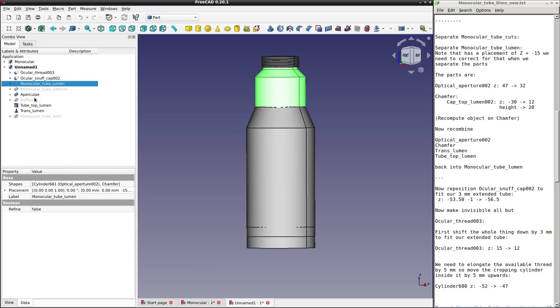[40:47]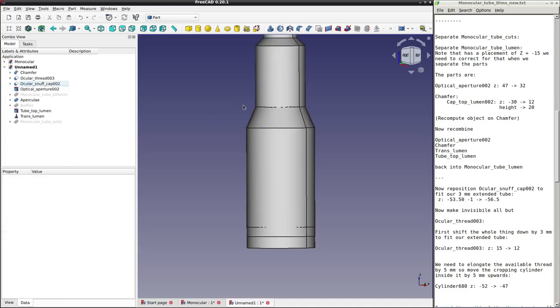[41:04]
Now, notice that the cuts are of two parts. There's the parts that deal with the thread, and there's the lumen. I'm going to open up this lumen into separate parts. So I select it. But first, you should notice that it has a minus 15 offset. When I do the delete operation on this, that will also delete this minus 15 offset. So we need to add this minus 15 offset to the component parts as we edit them. So select, delete. So you see it's moved up when we did the delete. So let's start operating on these parts. So optical aperture 002, that's this little bit here.
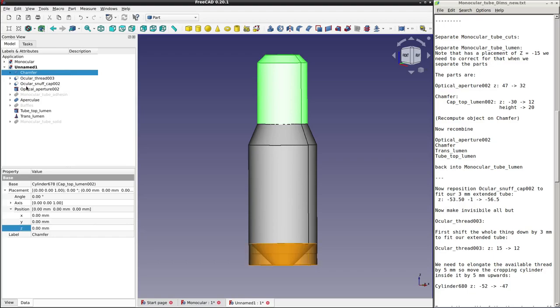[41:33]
We just need to shift this by minus 15 in Z. So placement, position. So it goes from 47 to 32. Okay, that's that dealt with. Now we'll do the chamfer part, this bit here.
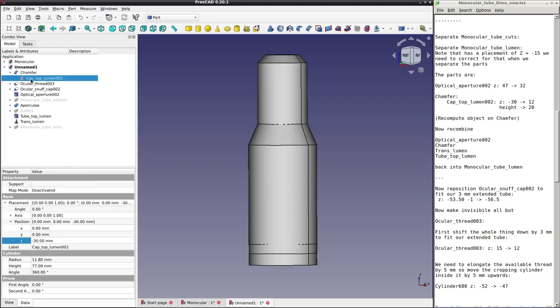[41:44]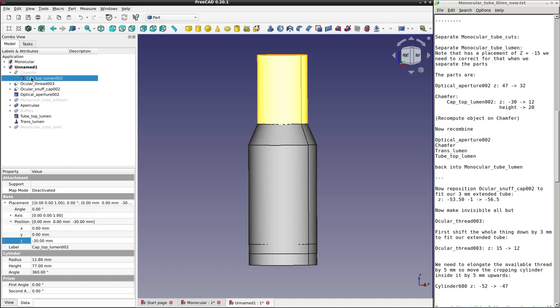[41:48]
Now remember this, well, this is the counterpart of the unchanged part that we dealt with. So we have to, again, reduce the size of this to what it was on the solid component. So if I make that invisible, make this visible, the cylinder, we're going to change the height to 20. And we'll need to shift the Z because of that offset. So we're going to go from minus 30 to 12. So that puts it in the correct position.
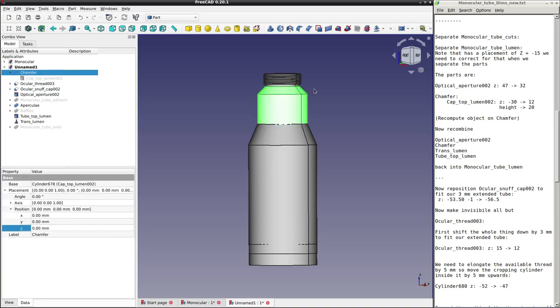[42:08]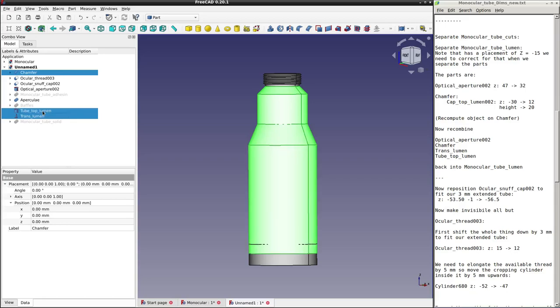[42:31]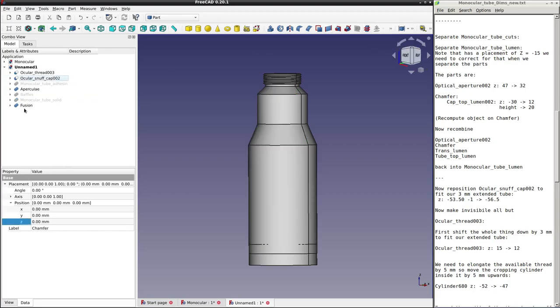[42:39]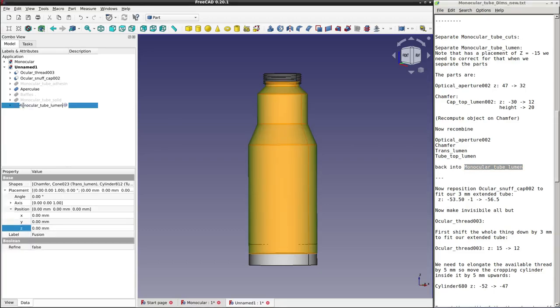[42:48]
So this is the unchanged part, the internal lumen of the unchanged part. And we've already made the luminal parts for the transition and the new expanded bit. So now we can recombine them all. So we'll take the chamfer, finger on the control key here, the trans lumen, and the tube top lumen, and the optical aperture 002. And now we'll combine them with a union operation. And we'll rename the fusion monocular tube lumen. I'll just copy this to save me typing it out. So control C, F2. There we go.
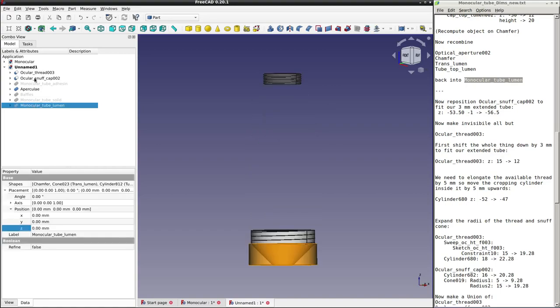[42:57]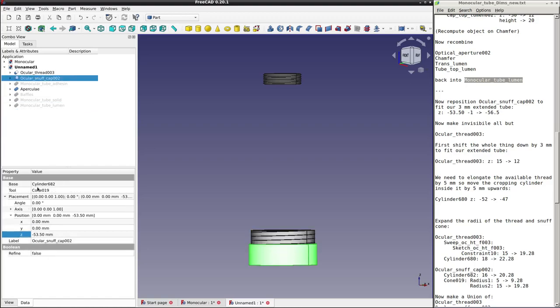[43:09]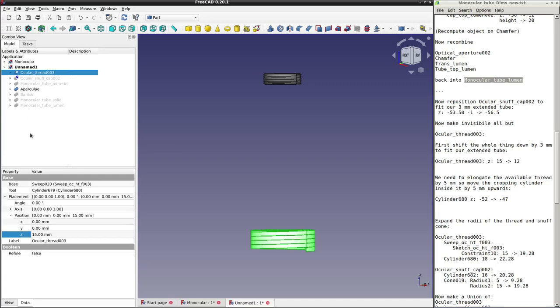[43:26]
So now we've dealt with the lumen, we need to deal with the thread parts. So let's just get that out of the way. The thread parts include the actual thread itself and a snuff cap. So we'll reposition the ocular snuff cap, select it, and we'll move it down by 3 millimeters. 1, 2, 3. That gives us the extra, compensates for the extra height of the new tube. And we'll deal with the ocular thread. Now, we can do the same for the ocular thread. Move it down by 3. 1, 2, 3.
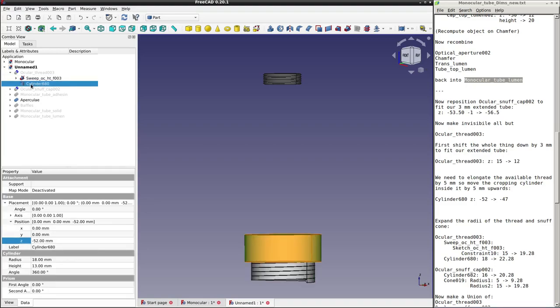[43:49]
Okay, now we need to do some other things for the thread and for the snuff cap. We need to increase the diameter, and we also need to increase the length of threading. So let's open up the thread. This is the sweep of thread, and this is a cropping cylinder. So a very easy way to increase the amount of threading is to simply lift this cropping cylinder up in Z. So we're going to move it from 52 to 1, 2, 3, 4, 5. So we may increase this by 5 millimeters, the amount of threading. So that's dealt with that.
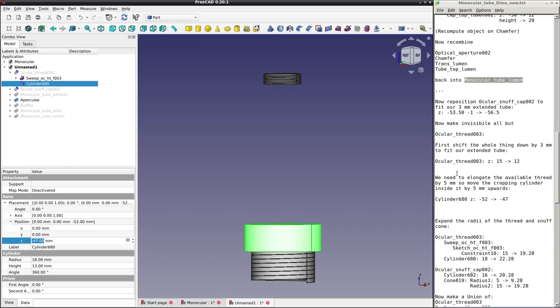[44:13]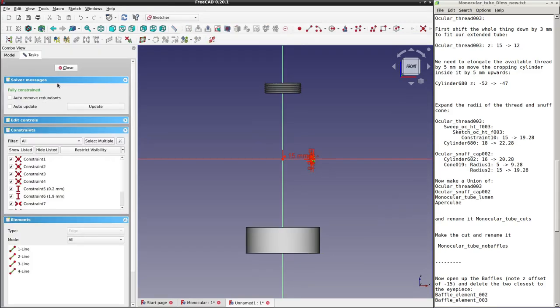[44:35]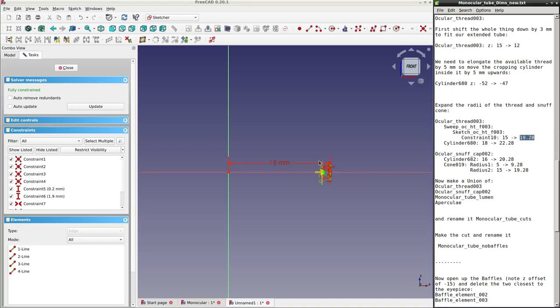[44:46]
Now, we're going to deal with the diameters. So if we go into the sweep, now we can deal with the sketch, very similar to how we did it with the other thread. So if we double click on the sketch, we're going to the sketch editor, and this time we do have a constraint ready made for us, so it's easier. We just need to change the value of this constraint from 15 to 19.28. Control C, double click on that, Control V, and that's all done.
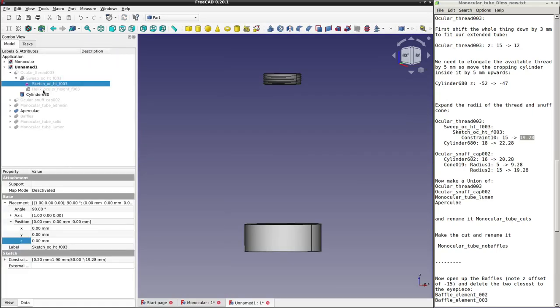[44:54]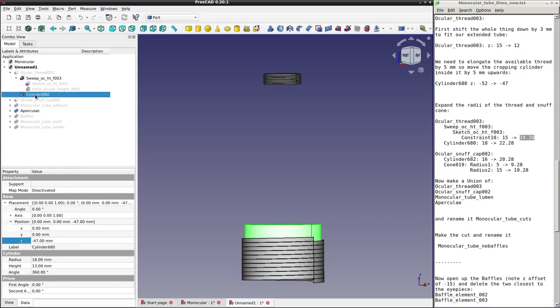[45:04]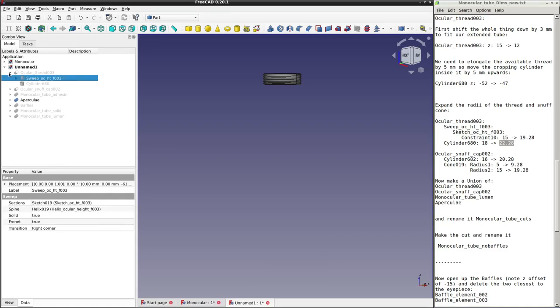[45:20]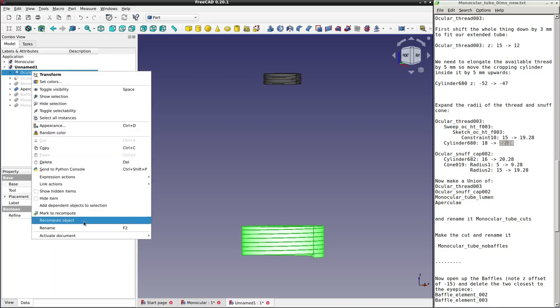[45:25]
And we want to make sure that the cropping cylinder also, you see now the cropping cylinder is smaller than the actual thread, so it won't do the crop. So we need to increase the radius on the cropping cylinder as well. So we'll make that the new radius 22.28. Control C. Control V. There we are. I'll just do a recompute object just to make sure everything, there we are. So we've dealt with the thread.
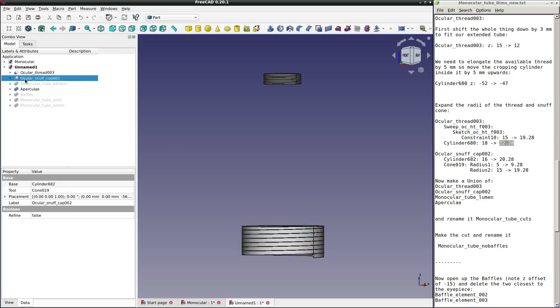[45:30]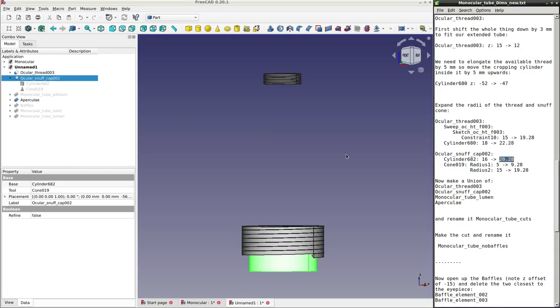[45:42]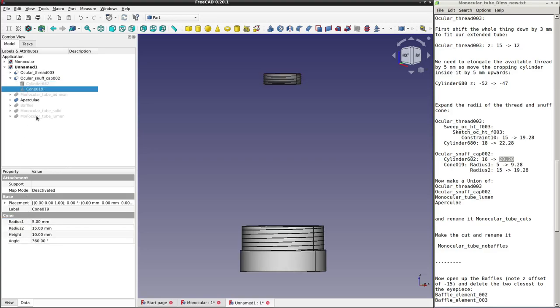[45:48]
Now we need to deal with the radii on the snuff cap because that's too small. So we'll open it up and we've got a cylinder and a cone. So on the cylinder, we're going to change the radius from 16 to 20.28. So there's the cylinder, 16, 20.28. And on the cone, we'll change the radii, radius 1, from 5 to 9.28, control C, control V, and radius 2 from 15 to 19.28, control C, control V. Looks like it's done, but I'll just do a recompute object just to make sure everything's okay.
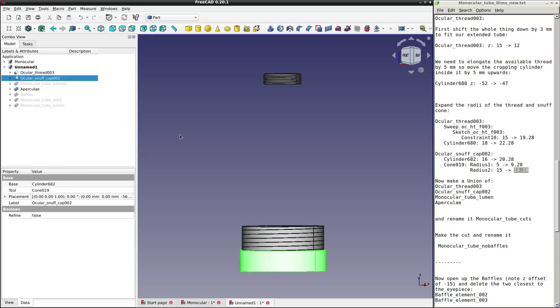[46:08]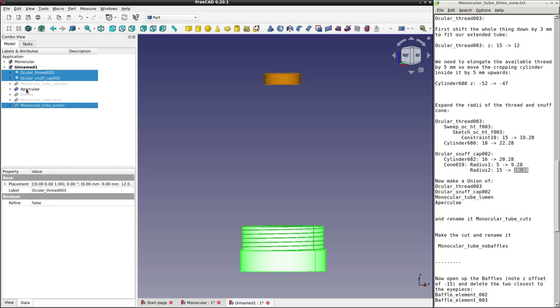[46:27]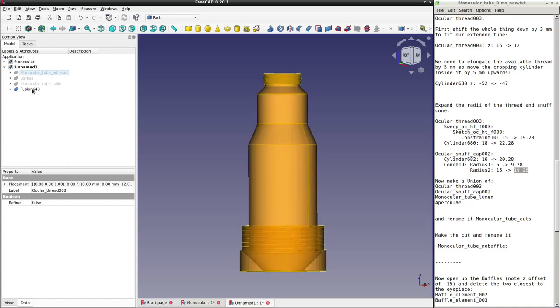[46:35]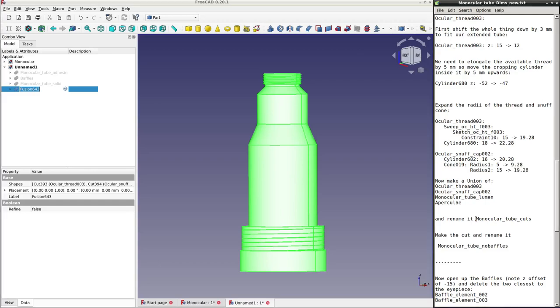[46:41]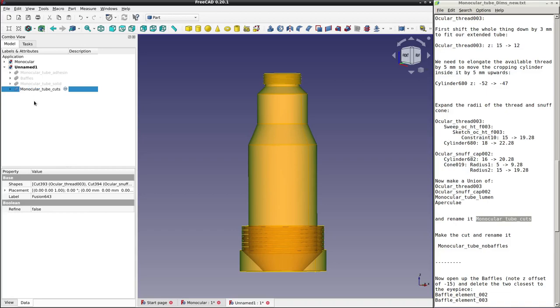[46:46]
So, now that's dealt with, we've got the ocular thread, the ocular snuff cap, we can make a union. So we're going to do the ocular thread, the ocular snuff cap, the monocular tube lumen, the new lumen we made, and the aperculae, all selected with control key pressed down, and we'll go to our union operation to make them all into one. And now, F2, well, let's just copy this, it's easier. Monocular tube cuts, we'll change the name of the fusion to monocular tube cuts, so F2, control V.
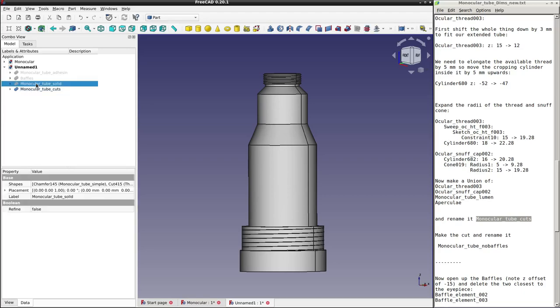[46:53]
And now we can actually make the cut. So we've got to select the solid part first, then with the control key down, select the thing you're going to cut away from it, then you select your cut operation.
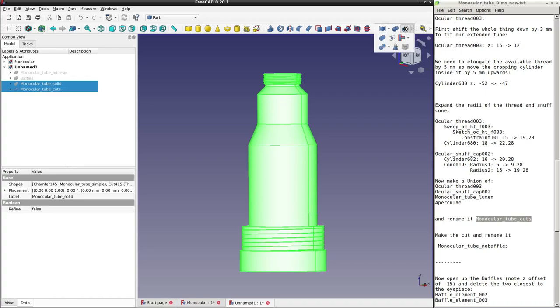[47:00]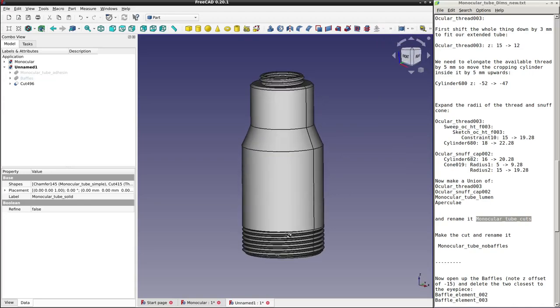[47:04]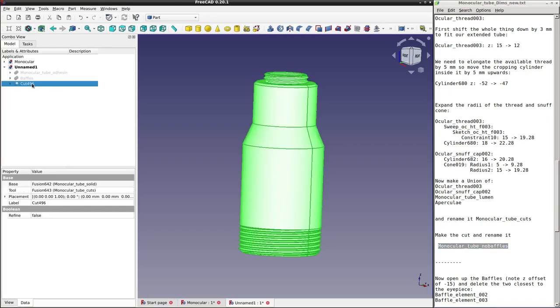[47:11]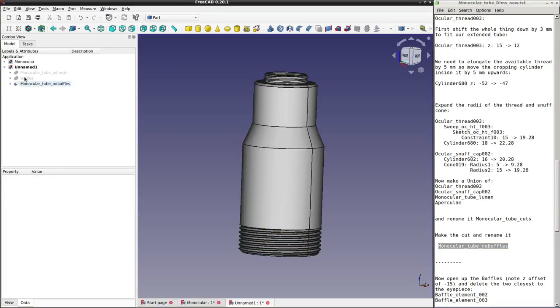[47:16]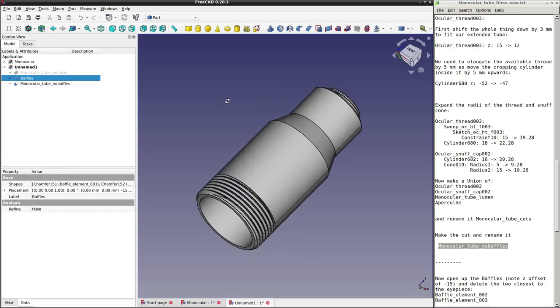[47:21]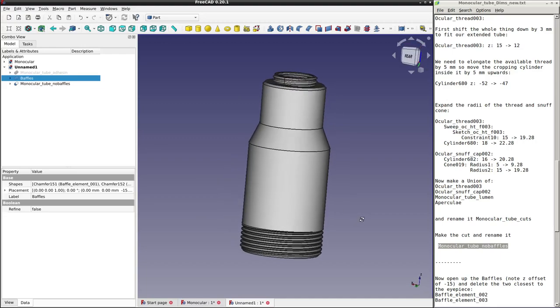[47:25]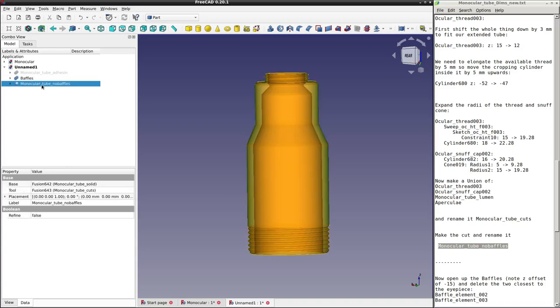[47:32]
That gives us the new tube without the baffles in it. Okay, so we'll call it that. Monocular tube, no baffles. Control C, control V. Now, we can't just add the baffles as they were originally because you see some of them are inside this expanded part. So we need to delete those. We're not going to use those because we need all this expanded part for possible filters in the sleeve of the new eyepiece. So let's just make this invisible.
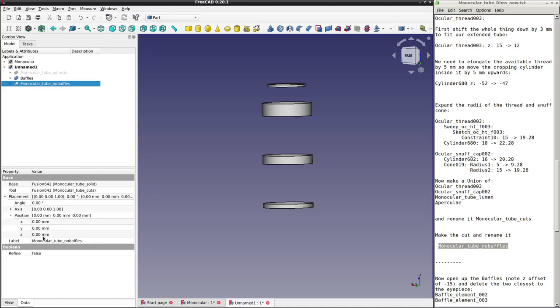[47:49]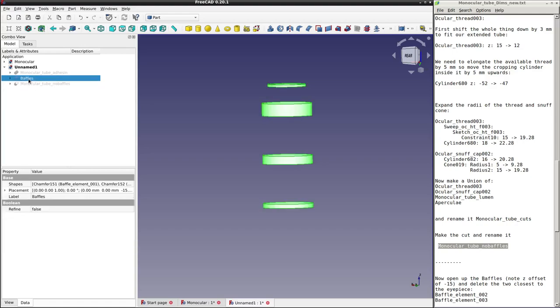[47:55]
So we want to delete this baffle and that baffle. These baffles don't need to change otherwise because they're the right radius, the right diameter. They're in the unchanged part. So to delete them, we need to open this out. But notice if we come down here, we need to keep an eye on the Z position if there's any offsets that we need to reapply. So if we select the baffles, because I was selecting the monocular tube just then, we'll go back. Yes, we see there's a minus 15 that we'll need to apply once we've deleted these baffles.
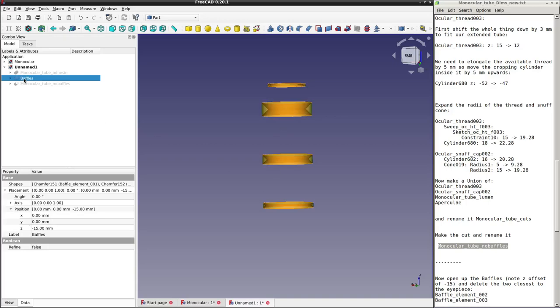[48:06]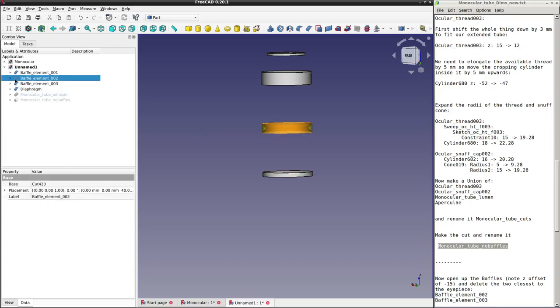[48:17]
So let's open it up, select, press delete. So that splits them all up. You notice that they've all moved up a bit because the offset is now gone. So we want to delete this and this. Now we can't just select it and press delete because all that will do is open it out into the next level as we were doing before. So the way to delete something completely, the quick way, is to go to the OpenSCAD workbench and you'll see there's a tool here called Remove Object and Their Children. So if you just select the thing you want to remove, click this button, and it removes it completely. So select, click, removes completely.
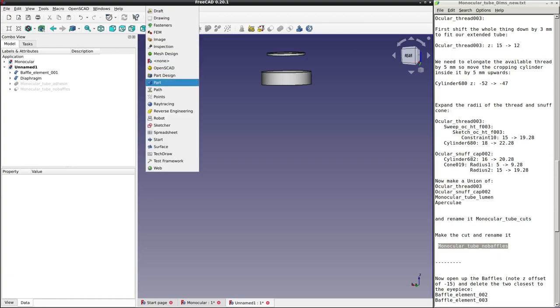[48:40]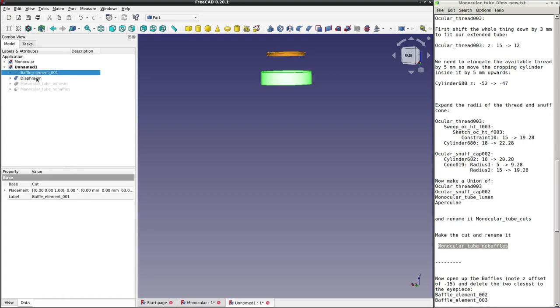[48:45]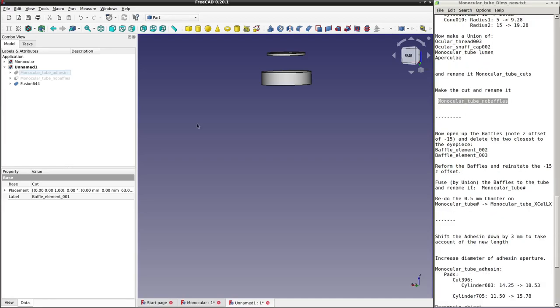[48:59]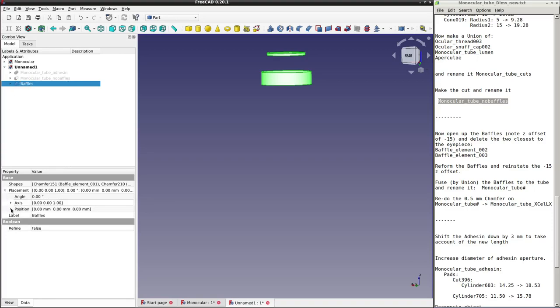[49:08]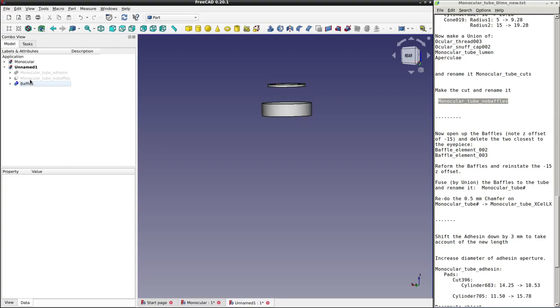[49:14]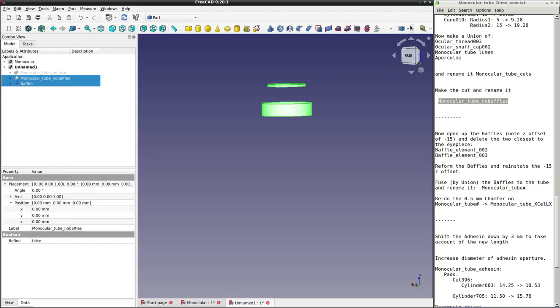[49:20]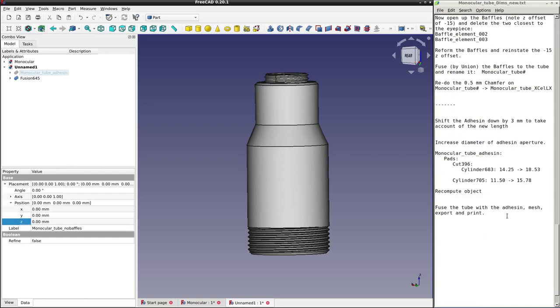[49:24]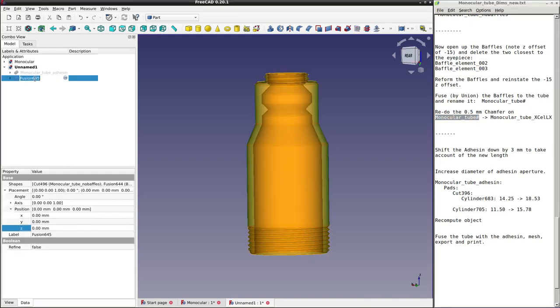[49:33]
So let's go back to our Part workbench. Let's take the remaining baffles with the control key held down, and we will make a union of them. And we can call the new fusion the baffles, F2, and don't forget we need to redo our offset of minus 15 here. Now we can combine the baffles with the tube without baffles. So with the control key held down, we select both, we do a union, there it is, and we can call this monocular tube sharp, control C, F2, control V.
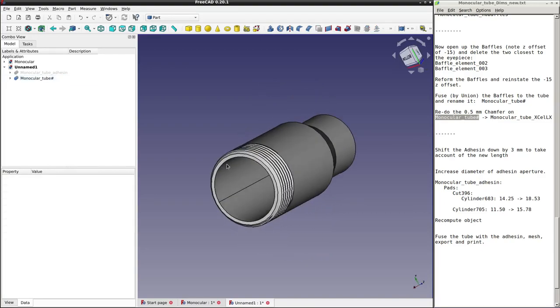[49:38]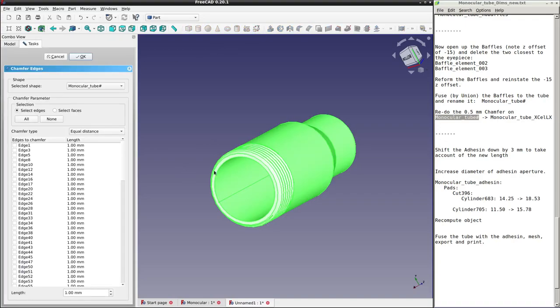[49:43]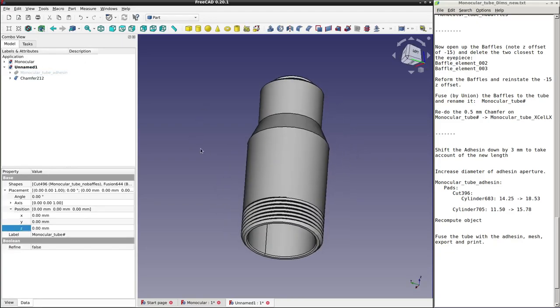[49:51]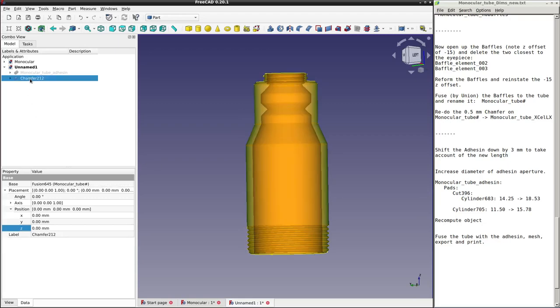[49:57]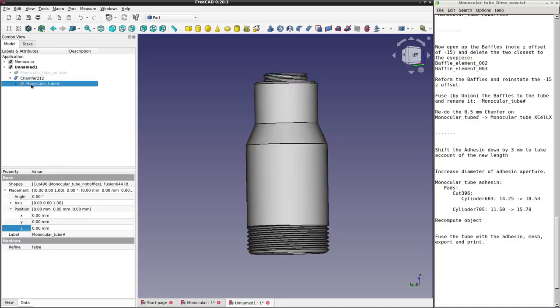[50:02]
Now remember we had that 0.5 millimeter chamfer that we undid. So select this, go to chamfer, select the edge, make it 0.5 millimeters. Say OK. And that is now our new fully done monocular tube. So we need to change this generic name. Let me go inside, copy this name, F2, Control C, F2, Control V, but instead of just leaving it as monocular tube, we're going to call it monocular tube XCellLX.
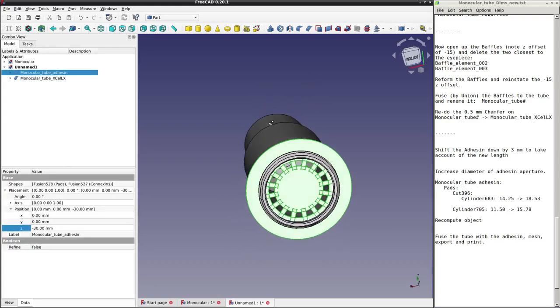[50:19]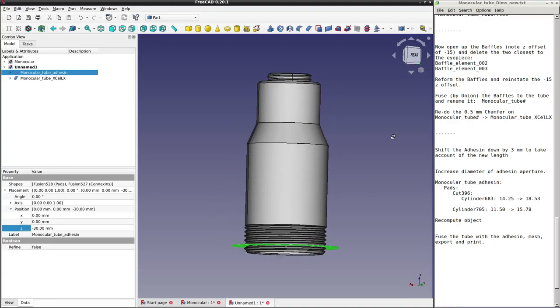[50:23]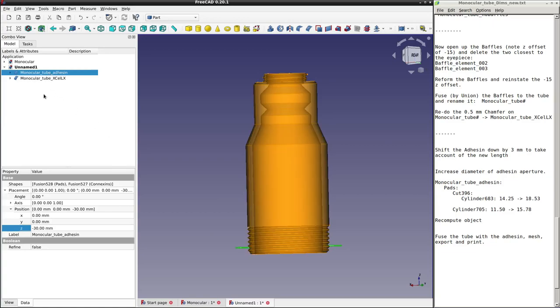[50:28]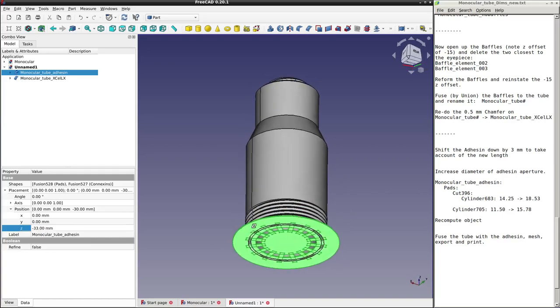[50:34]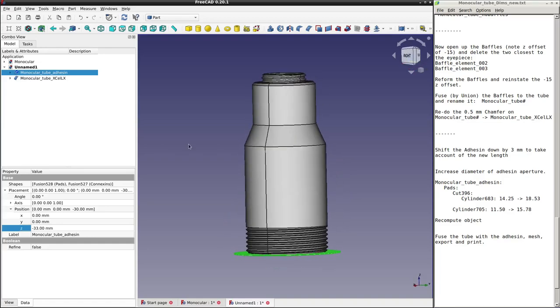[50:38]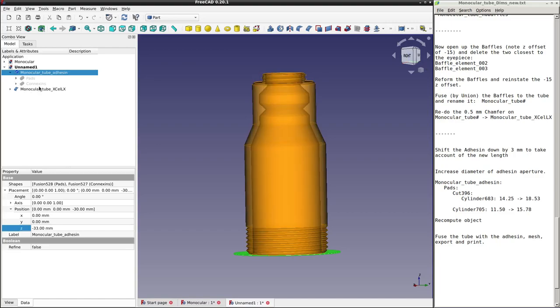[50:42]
Now we need to deal with the adhesin, because you see it's in the wrong place and the gap is too small. So we've increased the length of this tube by 3 millimeters. That was our design aim. So let us also move this down in Z by 3. 1, 2, 3. And there we are. It fits perfectly on the bottom, but we still need to deal with this gap because the radius is too small. So we can do that in situ. There's no need to take this apart.
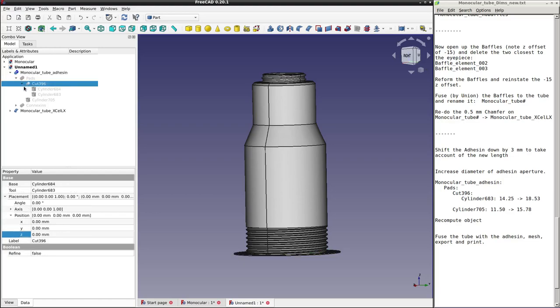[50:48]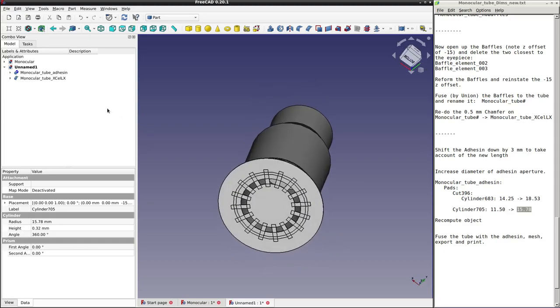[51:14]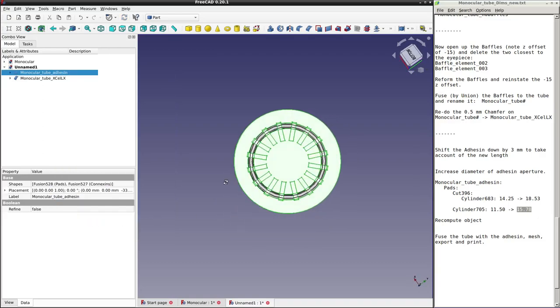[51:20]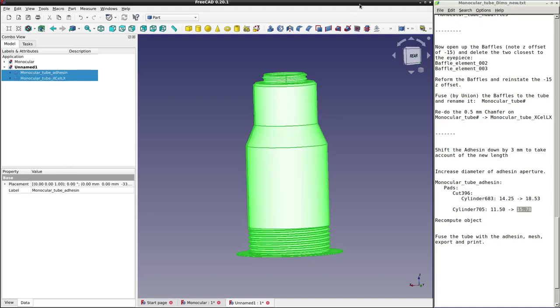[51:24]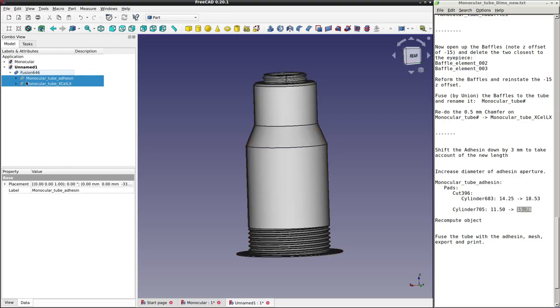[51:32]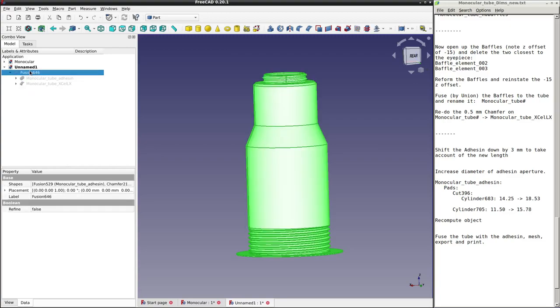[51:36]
So if we go to the pads, cut 396, and we'll increase cylinder 683 as shown here from 14.25 to 18.53. Control copy, control paste. Cylinder 705, we'll increase the radius of that from 11.5 to 15.78. Control C, control V. And you see it's marked as ready for recomputation, so let's recompute it. I'll show you what happens when we do that. So right-click, recompute object, there we are. So now the gap is in the right place. So now we can fuse these two together. Select them both with the control button held down, do a fusion. Okay, we'll rename that F2, Control C, F2, Control V, and we'll call it with adhesin.
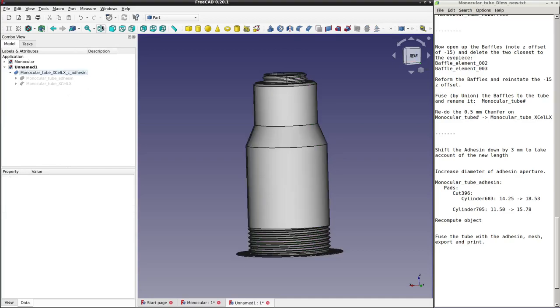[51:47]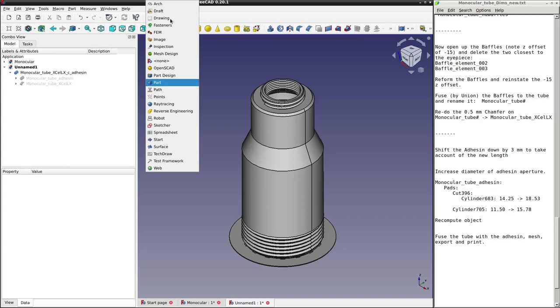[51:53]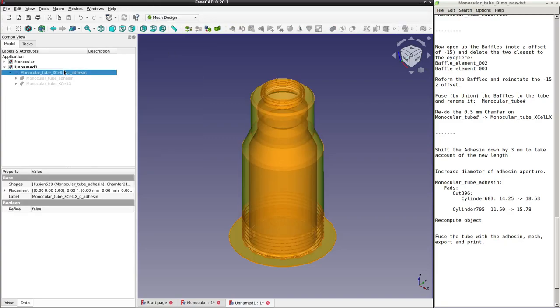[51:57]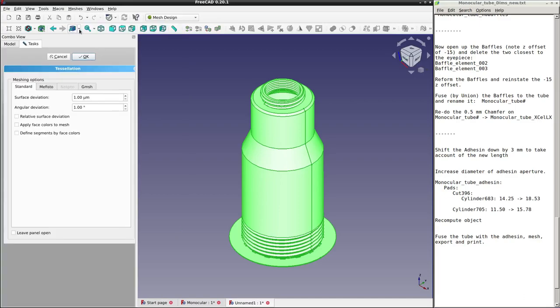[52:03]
Now let's check the orientation. That's the way I want it on the print bed. The print bed is down here. So this is all fine. We can do the mesh operation now and save it as an STL file, ready to go into our slicer program so that we can then put the resulting G code into our printer and print it.
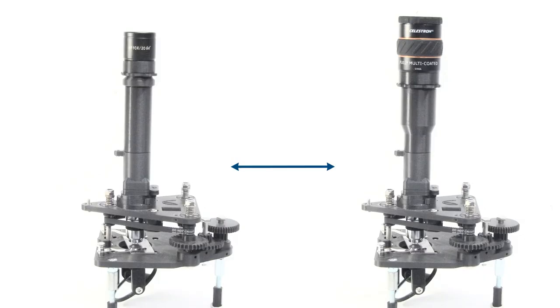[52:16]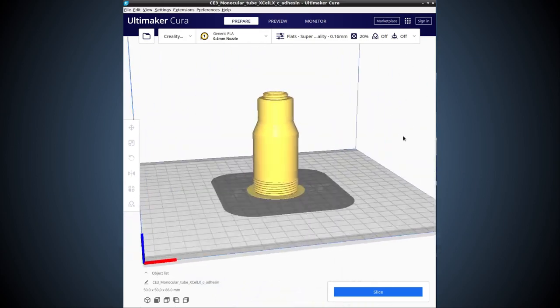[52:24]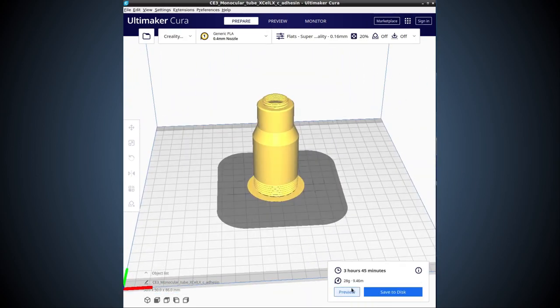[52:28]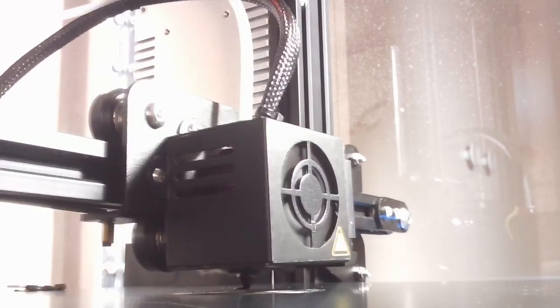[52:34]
I hope this video has given you a practical level of knowledge of how the PUMA microscope can be modified to suit your own custom needs, using this 1.25 inch eyepiece mod merely as an example. In part 2 of this video, I'll discuss the 3D printing, assembling, and use of this mod, and show some sample images using the Optark AF51 eyepiece camera. Together, these two videos should give you all you need to know to make any custom modification of the PUMA microscope design.
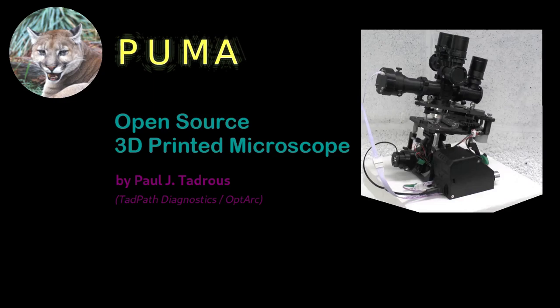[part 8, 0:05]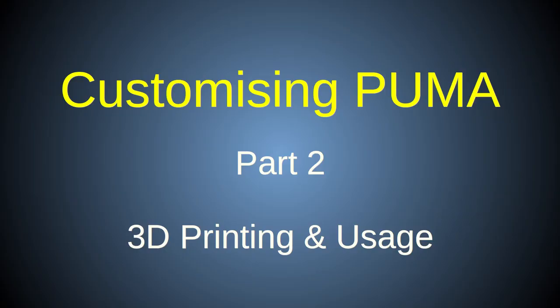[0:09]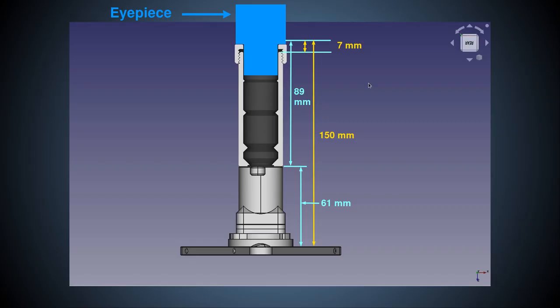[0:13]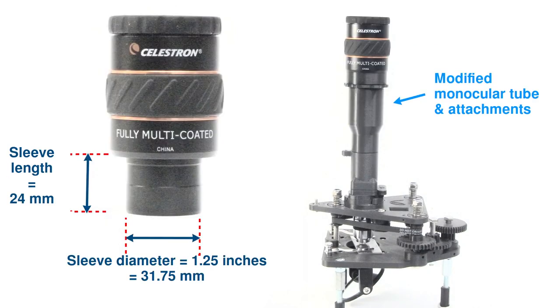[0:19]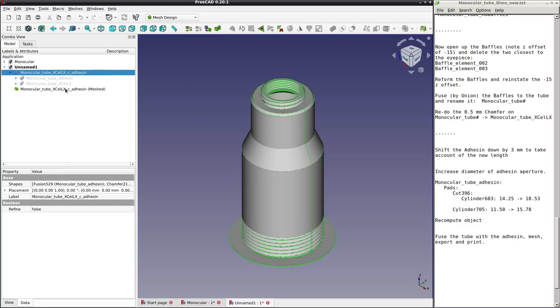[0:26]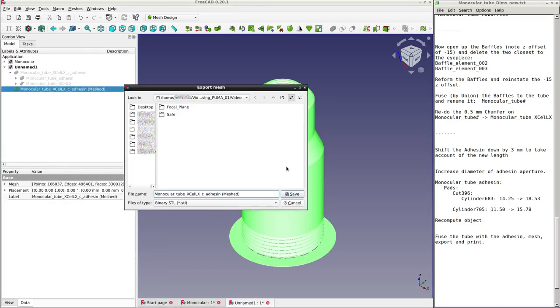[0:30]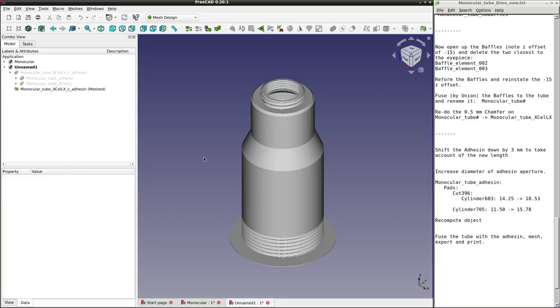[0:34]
In my last video, I took you through the design and FreeCAD editing steps needed to customize the PUMA microscope, and I used a specific example of making PUMA compatible with a Celestron X-Cel LX astronomical eyepiece. This ended with the generation of STL mesh files for the new models, but the realization of those new CAD models into physical models was not discussed. In this video, I'll show you how to 3D print, assemble, and use those new models.
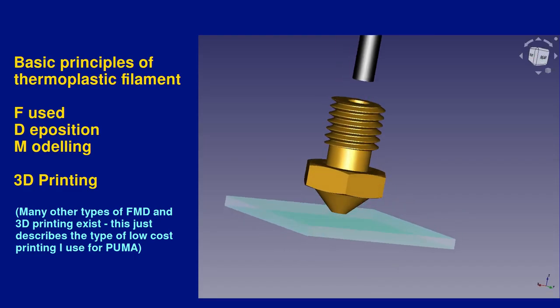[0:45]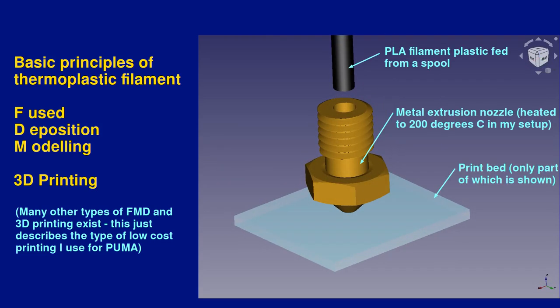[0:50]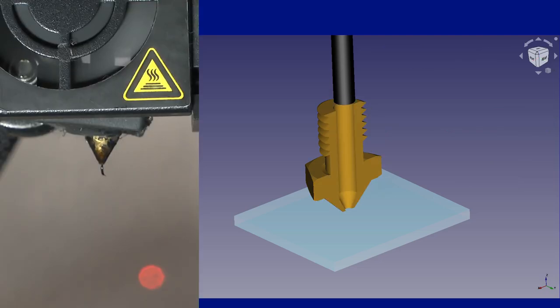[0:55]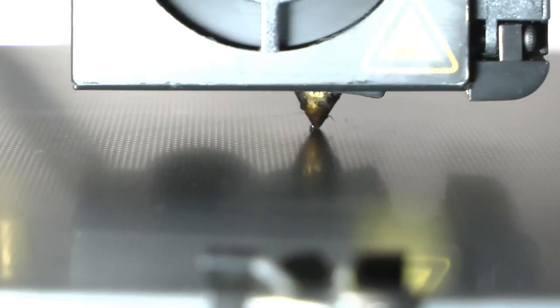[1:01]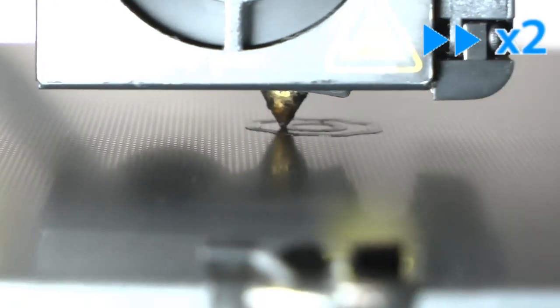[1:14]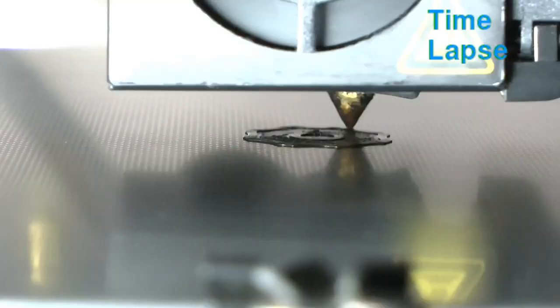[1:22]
First, I'll give a basic introduction to the type of 3D printing process I'll be using, which is an FDM, or Fused Deposition Modeling-based, additive manufacturing technique whereby a filament of thermoplastic is melted and extruded through a heated nozzle. While this extrusion is happening, the nozzle moves over a print bed surface in a pattern to lay down a thin layer of plastic. The process is continued after raising the nozzle a little to lay down another layer of plastic, which fuses to the previous layer before it solidifies. By continuing this process, a model is built up one Z layer at a time.
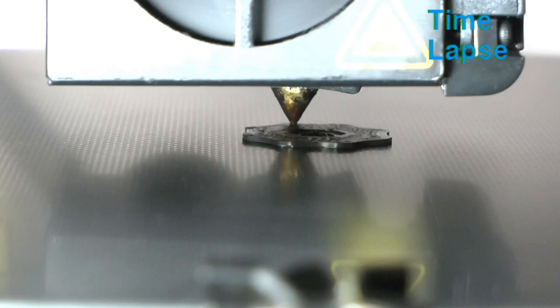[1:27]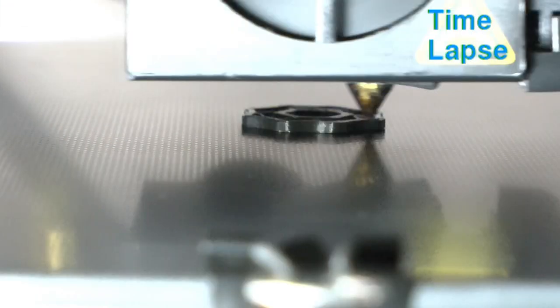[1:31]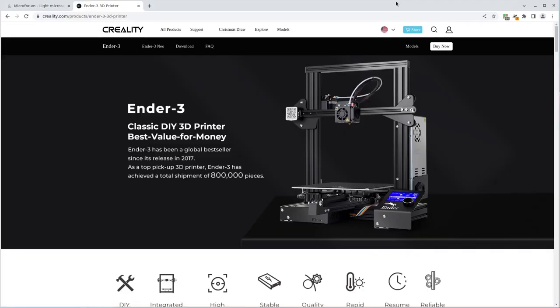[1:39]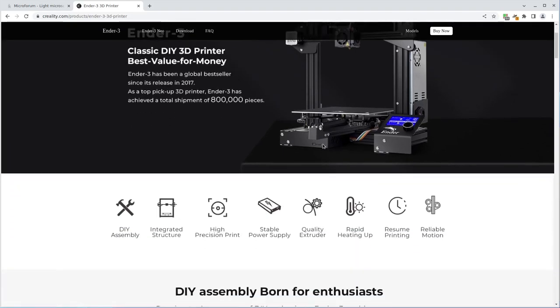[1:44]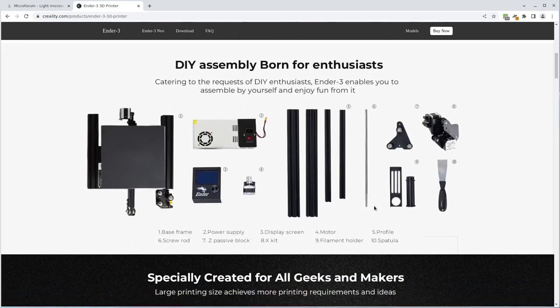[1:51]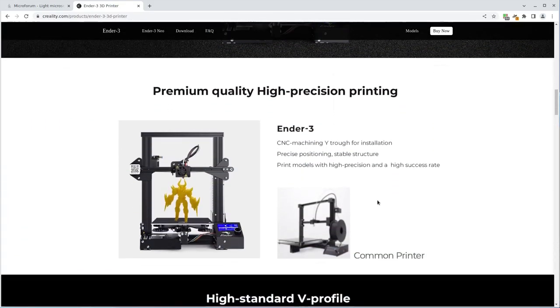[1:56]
Now, there are many variations on this theme, and there are also different types of 3D printing that do not use this FDM technique. The interested viewer is referred to links in the video description to learn more. The printer I use is called a Creality Ender 3, which is a low-cost open-source hardware printer. Now, I'm not saying this is the best printer to use. Choosing a printer is like choosing a camera. There are many factors to consider, and there is no single best option. But this is the one I've been using for all the PUMA projects so far, so it's the one I have the most experience with.
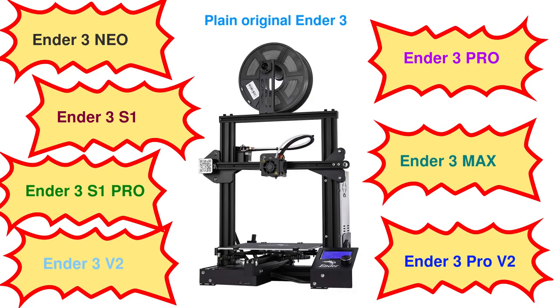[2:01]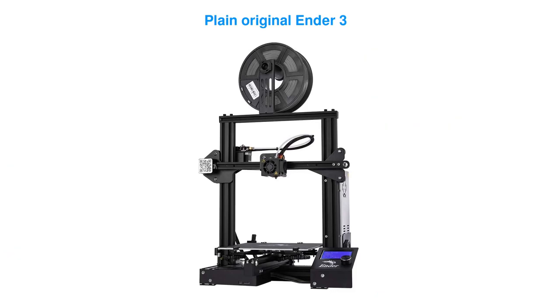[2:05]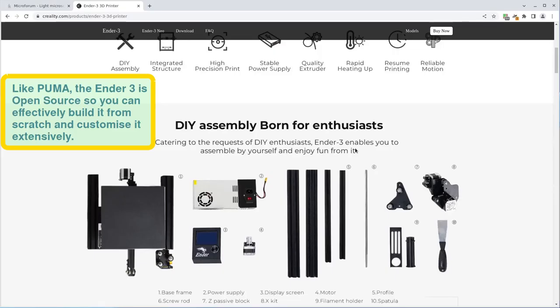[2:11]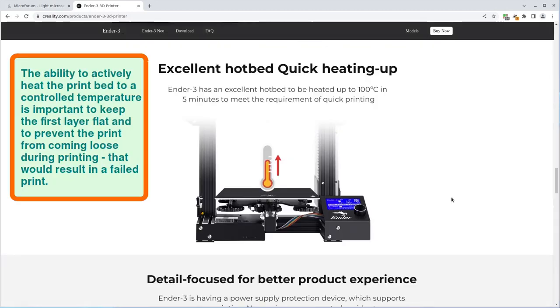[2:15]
There are many subtypes of this Ender 3 series, but I use the original model with a few modifications I made, which I can describe in another video. For now, just note that some of the advantages of this printer are its customizability and the fact that it has a heated print bed. The print bed is the surface that the first layer of plastic is extruded onto, and allowing the bed to be heated helps keep the model adherent to the bed throughout the printing process to avoid print failure.
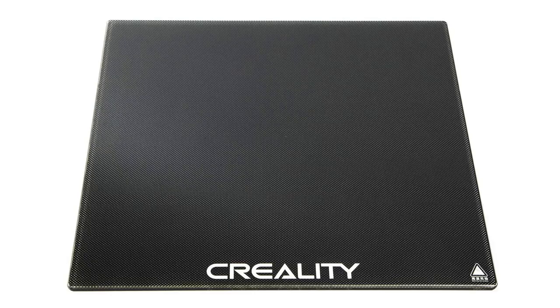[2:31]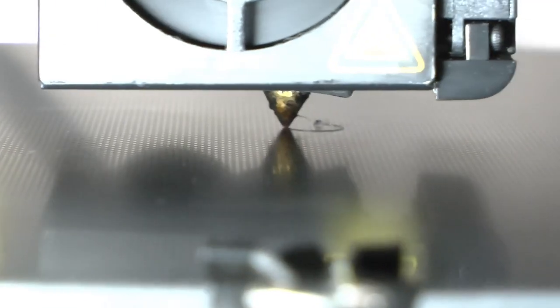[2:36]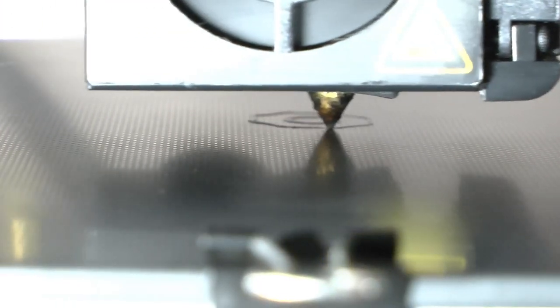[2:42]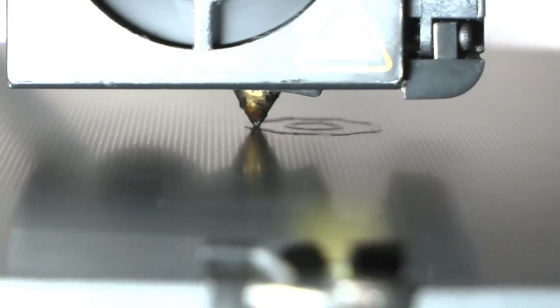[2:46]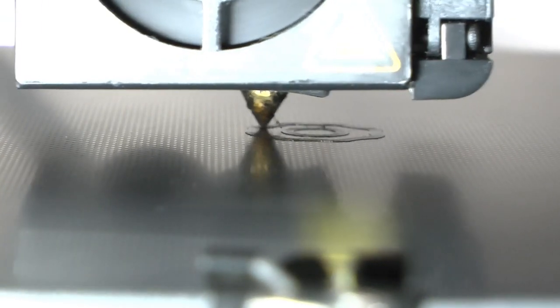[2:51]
I use a carborundum-coated glass print bed because I find this gives excellent results both in terms of print adhesion and first layer flatness. However, I find that I need to treat these beds in a certain way when they are new, because otherwise they tend to be too sticky, and this can lead to problems when trying to remove your prints from them afterwards. The details of this treatment and my other 3D printing techniques will need to be the subject of a separate video.
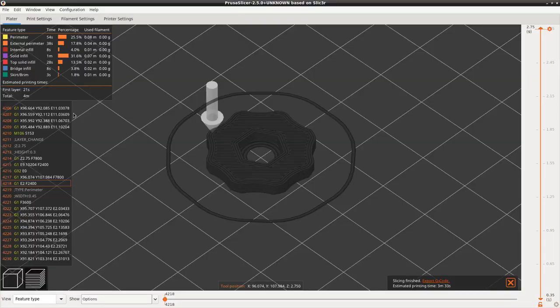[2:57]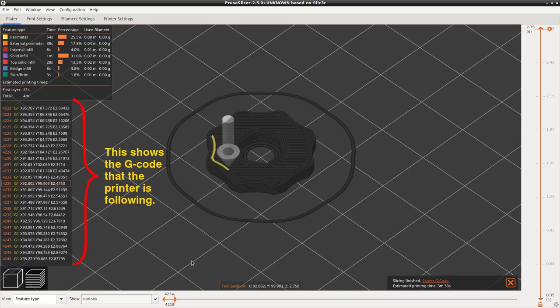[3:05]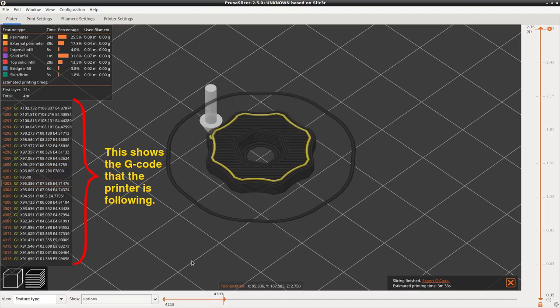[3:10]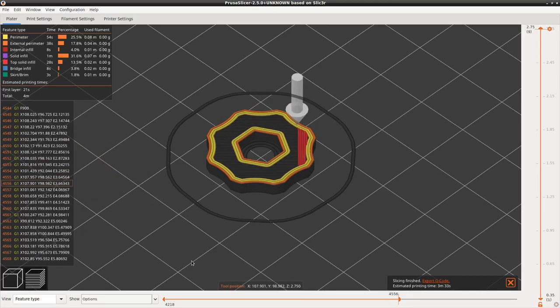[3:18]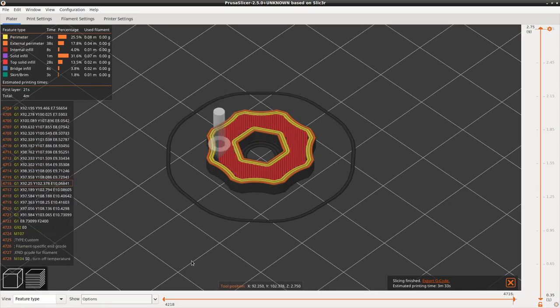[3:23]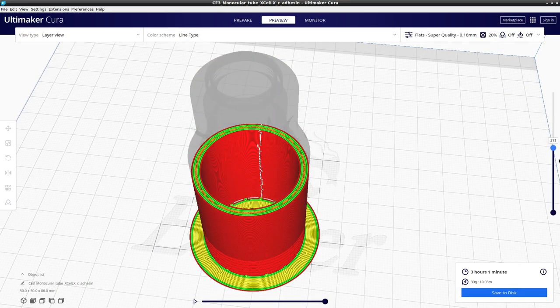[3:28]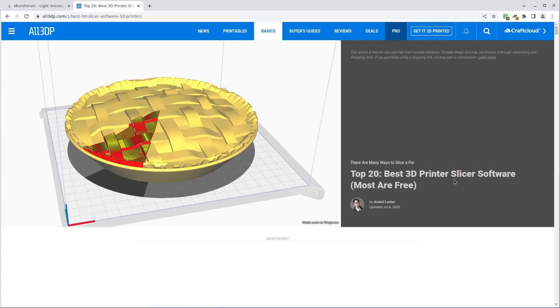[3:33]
Many 3D printers receive their motion instructions in the form of a language called G-code, which directs the position of the nozzle, the temperature of the nozzle and the print bed, the feed rate of the input plastic filament, and other functions of the printer. One of the key steps in turning a CAD model into an actual 3D print, therefore, is to convert the shape dictated by the CAD model into G-code that the printer can work with. Because this type of printer puts down one layer of plastic at a time, this conversion process is known as slicing the model, and a slicer program is used to do it.
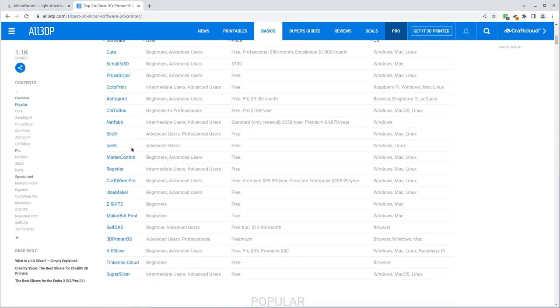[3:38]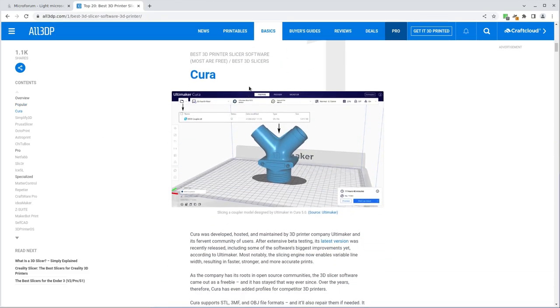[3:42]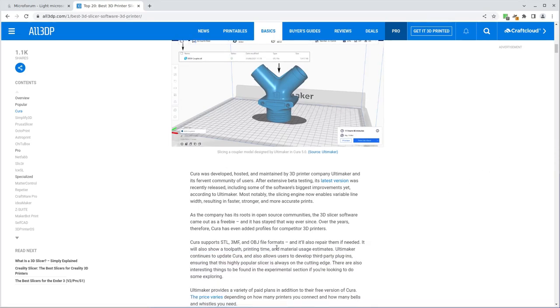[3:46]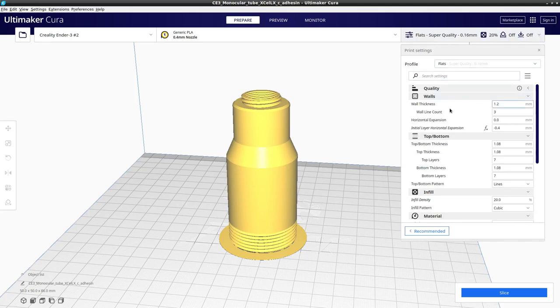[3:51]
The slicer program I use is called Cura. Cura is a free and open source program that can read a variety of CAD model formats, but the one I tend to use is the STL mesh, which I showed you in my last video. There are many settings you can adjust for a particular slicing operation, and the choice of settings is crucial to making G-code that works well in giving you a good 3D print.
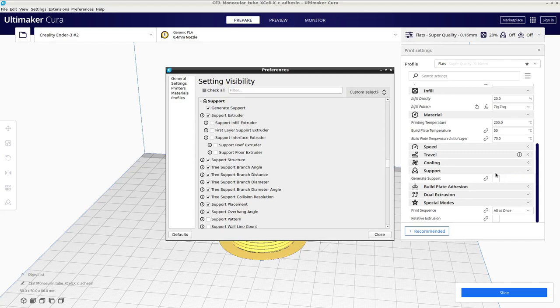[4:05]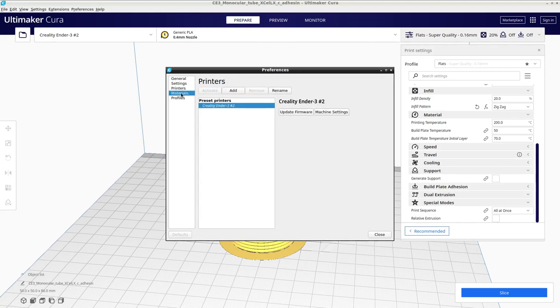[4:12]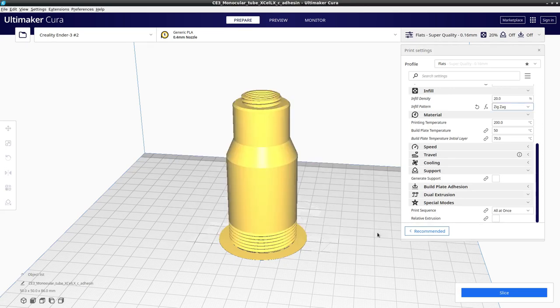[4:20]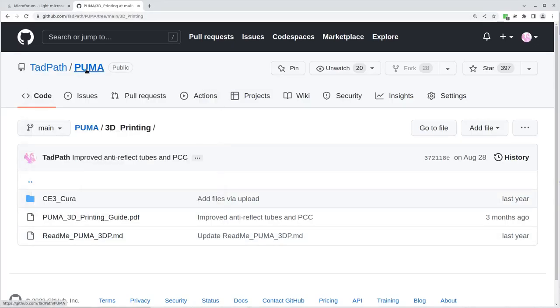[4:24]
To help people who want to print PUMA parts, I provide my recommended settings in the form of Cura profiles for various PUMA models. These Cura profiles are settings files you can import into Cura that will automatically adjust the required settings for you for a particular model. However, these settings are specific to the Ender 3 printer, so if you are using a different printer, you may need to use different settings. See the PUMA GitHub page to download my Cura profiles.
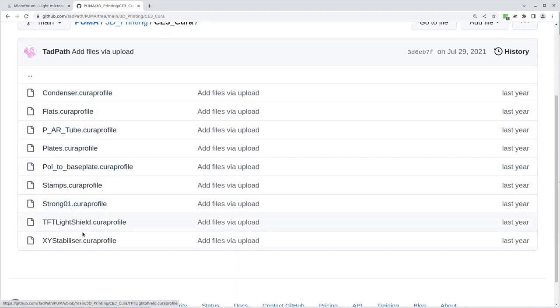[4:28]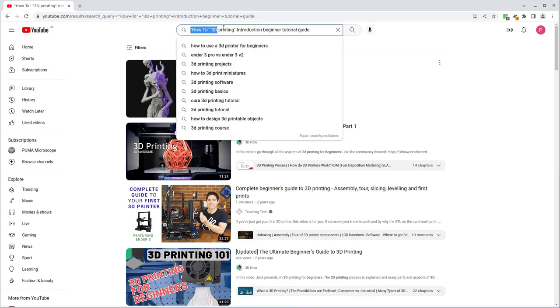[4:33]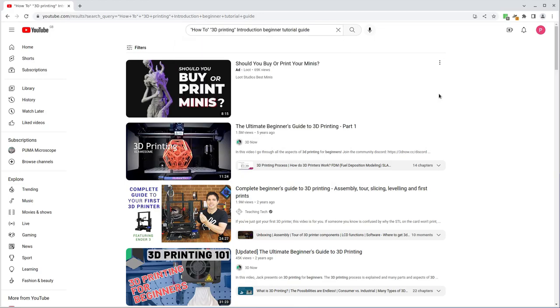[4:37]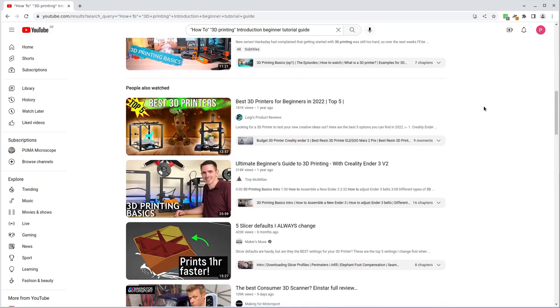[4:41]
If you are brand new to 3D printing, there are some excellent YouTube videos that teach various aspects of how to use 3D printers and slicers, and you should spend some time learning the basics with these before attempting to print PUMA parts. I'll put some links in the video description to some example channels to check out.
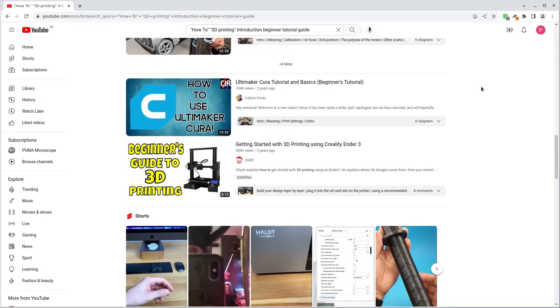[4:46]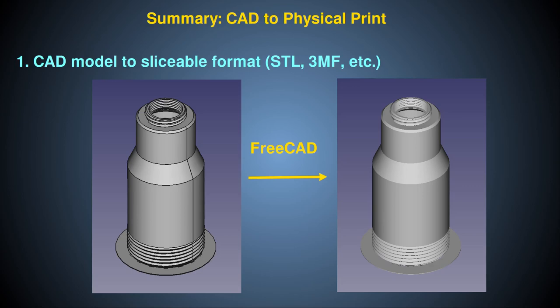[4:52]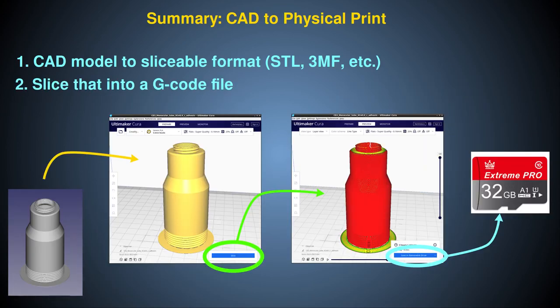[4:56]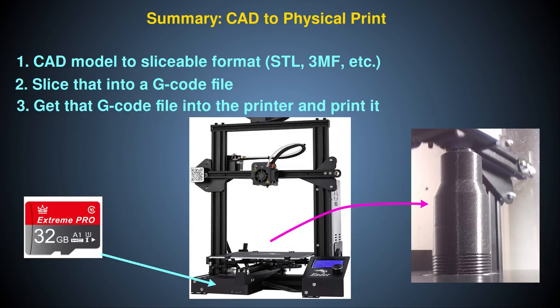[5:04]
So, to summarize, the general procedure I use for creating a 3D print from a CAD model is to convert the CAD model into an STL mesh file using FreeCAD, load that STL mesh file into Cura, and use Cura to slice that mesh into a G-code file. The G-code file is then saved onto a memory card, and the memory card goes into the printer, which runs the G-code to print the model.
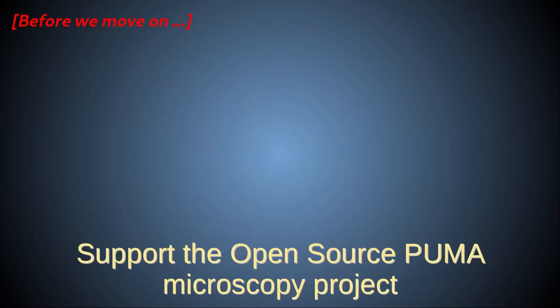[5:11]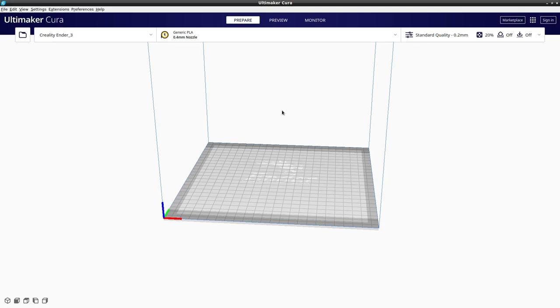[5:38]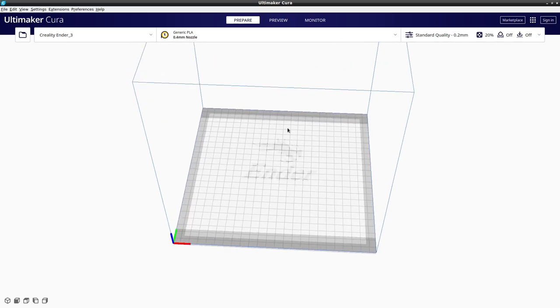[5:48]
So now I'll show you how to use Cura to slice the actual STL mesh files we made in the previous video on customizing PUMA. You can see that I've opened up Cura, and I've set it up for my printer, including the type of nozzle and plastic that I'll be using.
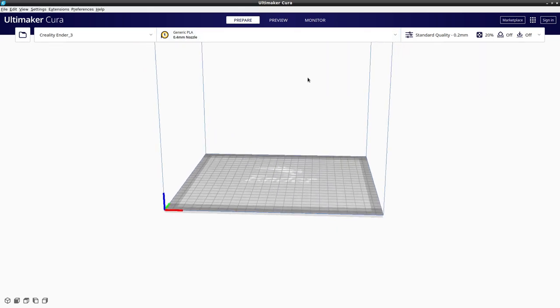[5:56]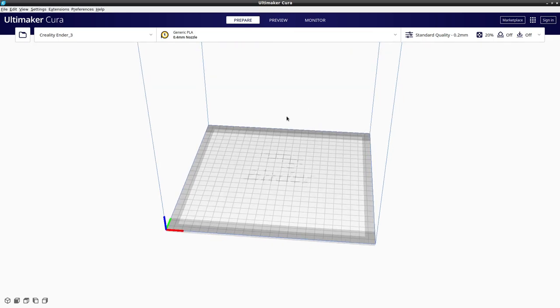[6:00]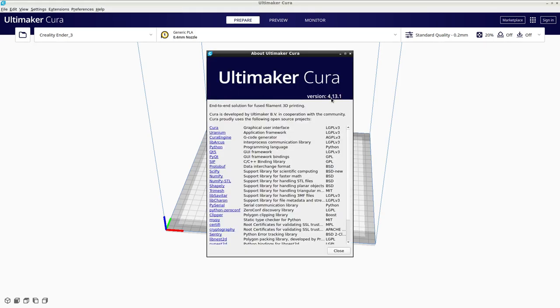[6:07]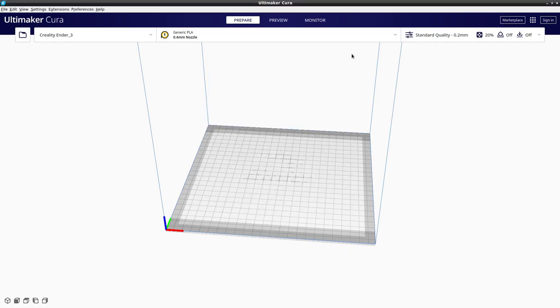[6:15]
Now, I'm not going to give you a detailed tutorial on the basics of using Cura, because that's what those YouTube videos I recommended earlier will do. Just to note that we are using version 4.13.1, and this is on Linux. There is a later version, version 5, but that's quite different, and so I'm not using that in this demo.
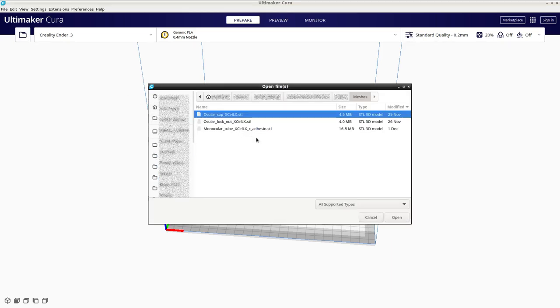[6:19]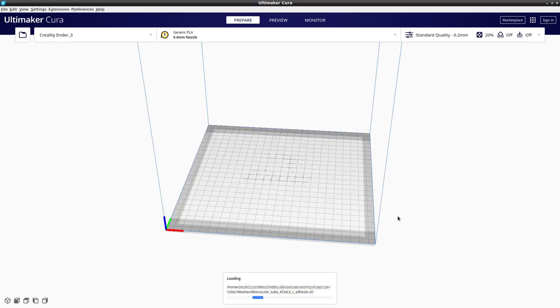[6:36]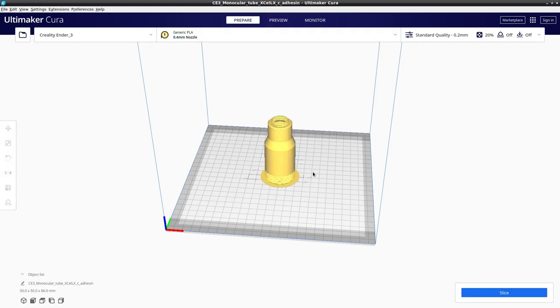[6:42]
First thing to do is to open up our STL mesh and load it. These are the three STL meshes that are part of the customized model example. I'm only going to show you the monocular tube in detail because the other two follow exactly the same procedure. So we'll double click, or click it and select open, and that will load the mesh onto the display area. We are in the prepare mode at this stage because we haven't sliced it yet.
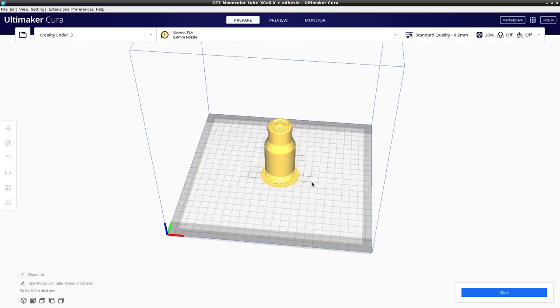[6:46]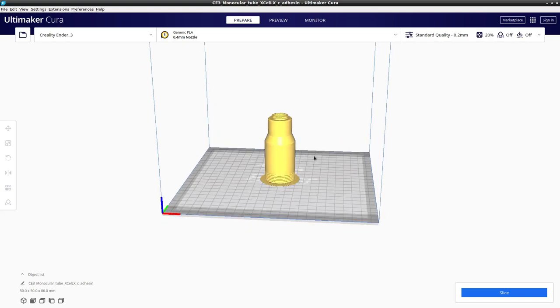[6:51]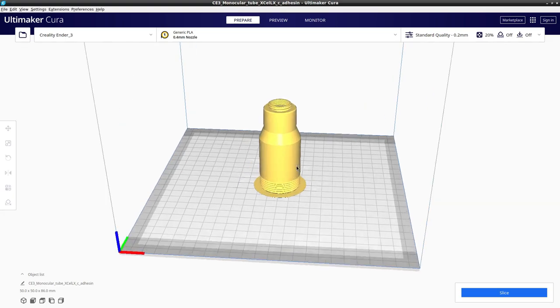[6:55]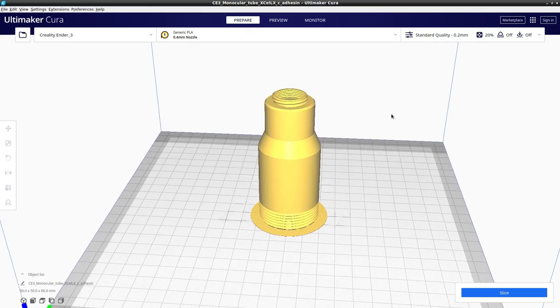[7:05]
So this is our model. I'm manipulating the view by dragging the right mouse button, and the scroll button will bring us closer. If you want to shift the view around, press the shift key on the keyboard and drag with the left mouse button anywhere on the background, but don't select the model itself, because if you do that, you will get the model manipulation tools, and we don't want to manipulate this model.
So now we'll set the Cura settings for the slicing, and that's dealt with up here. This is the standard Cura profile, which comes with Cura, but we don't want to use that. We want to use one of my custom PUMA microscope profiles, the one that's called Flats. So you select the profile from this area here, and we're going to use Flats. Now, this is a custom profile that you can download from my PUMA microscope GitHub page.
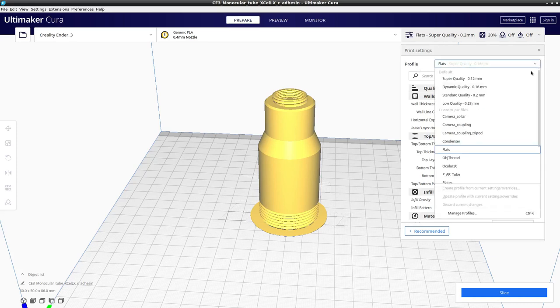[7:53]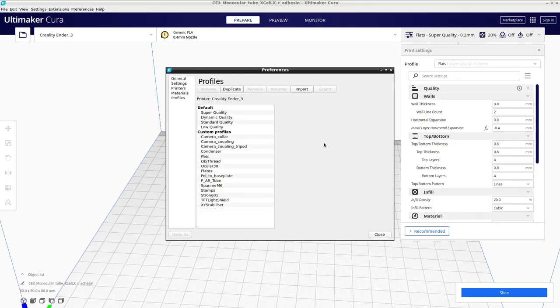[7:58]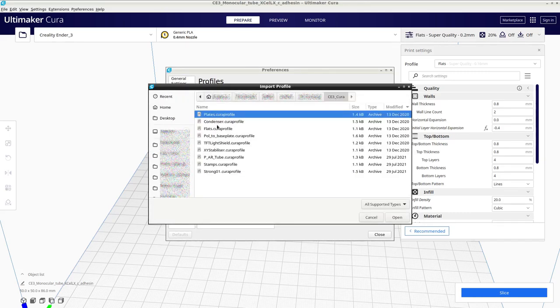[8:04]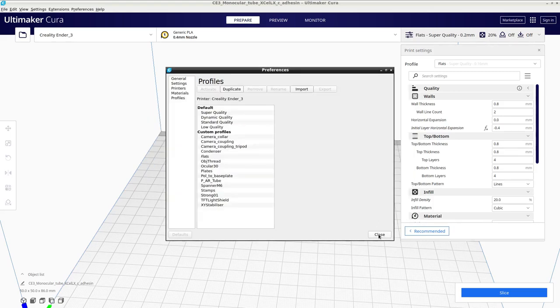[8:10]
If you haven't done that already, go to the GitHub page and select the Flats Cura profile, and then you can install it by going to this thing here, Manage Profiles. Click on that and it will give you this dialog box, and then you select Import, and then you select the file you downloaded, in this case Flats, and you select Open. But I've already done that here, so I'm just going to cancel that.
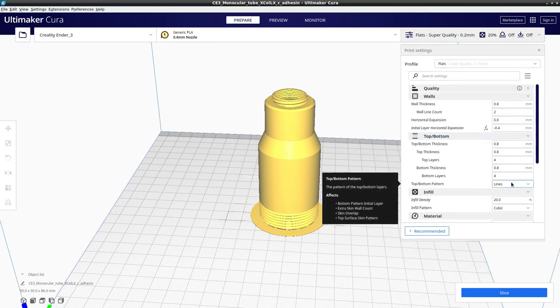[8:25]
So now we have our Flats profile, which has set all these settings for us. But there are some modifications which I recommend when printing this model, so I'll show you how to make those modifications to this Flats profile. The first thing we're going to do is change the pattern of the top and bottom layers to concentric. And the next thing we're going to do is change the infill pattern from cubic to zigzag. So that shows you how you can customize even custom profiles.
So that's done. We don't need any supports, so that's off. And now we simply click the slice button. And after a while, it will calculate the various parameters and show us our sliced model, which we can preview using the preview.
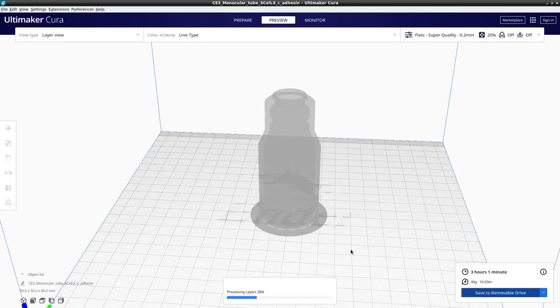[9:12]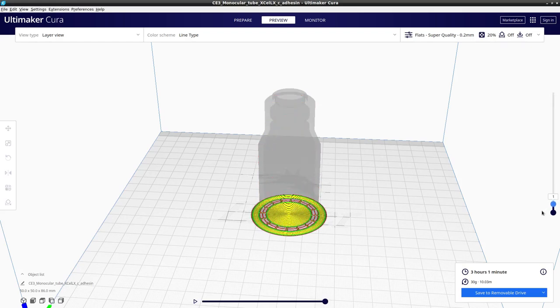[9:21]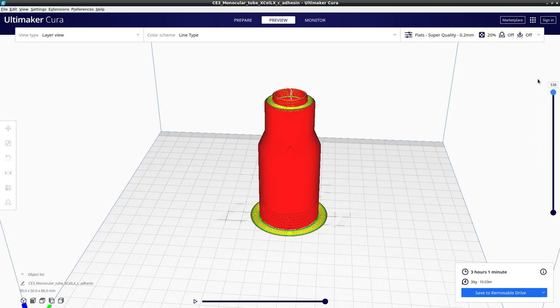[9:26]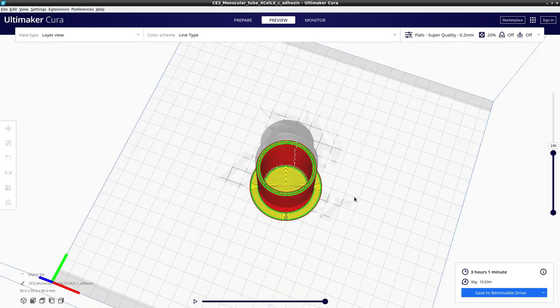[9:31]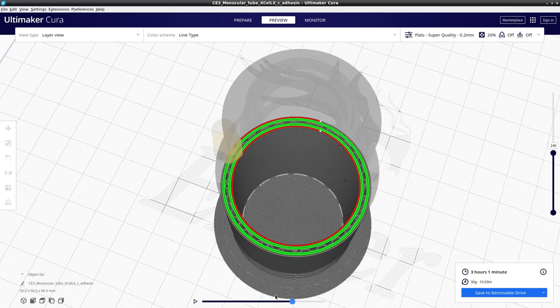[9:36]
And it's done now, so let's preview this model before we save it. So click on the preview button. It takes a bit of time to calculate the various slice views. And then you can use this drag control slider bar to slice through to make sure that everything is as you would expect. There's no gaps, for example, or anything that could derail the printing process. We can zoom in, and on any individual layer, you can use this slide bar to show what the print nozzle will do.
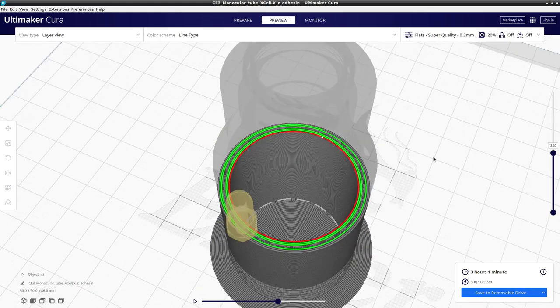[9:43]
Okay, but I know that all works. And so now we can save it to a removable drive. I have a removable drive already in the computer. That's why I get this option. If you didn't have your SD card in the computer already, it will say save to disk. So you will only get this option if you have a removable drive already in the computer. So click on that to save it, and then that's it. We can take our card now to our printer and print it.
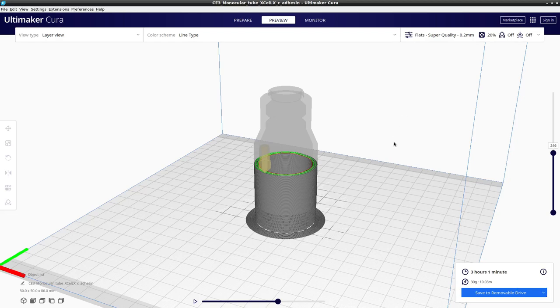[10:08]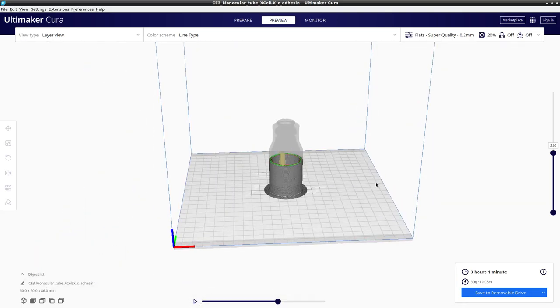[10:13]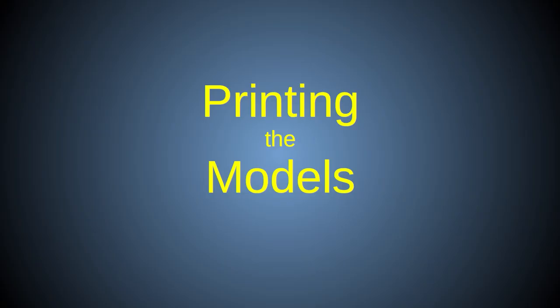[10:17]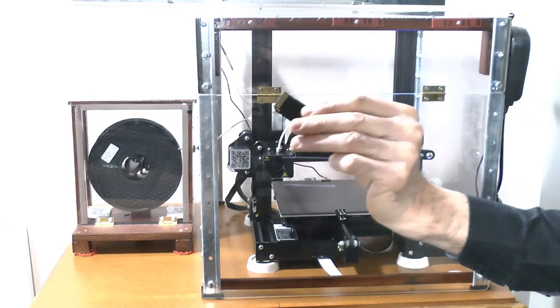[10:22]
Do exactly the same thing for the other models. And now I'll show you the printing process. Now that we have the G-code for our models on our memory card, it's time to print them.
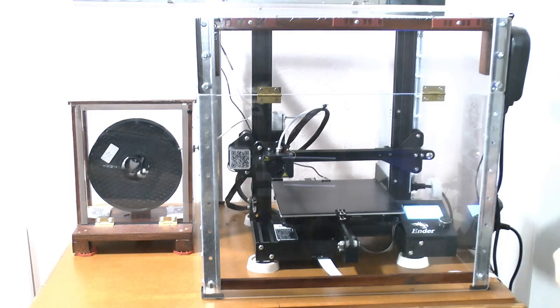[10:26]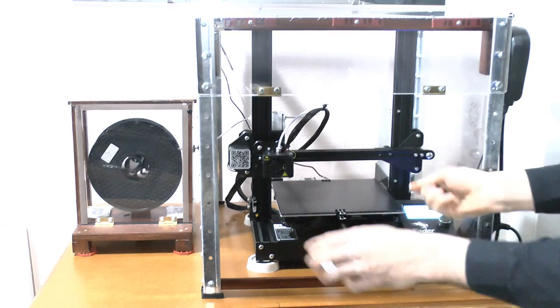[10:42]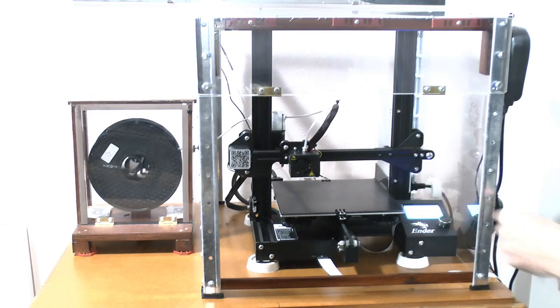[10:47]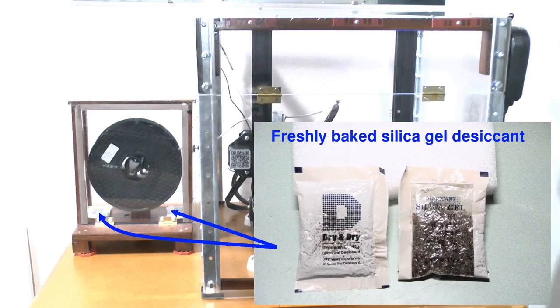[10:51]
This is my 3D printer setup. You can see that I've enclosed the printer in a homemade enclosure. This serves a number of purposes. It allows better control of temperature during printing. It prevents dust settling on the printer mechanical parts and print bed. And it avoids currents of air potentially interfering with the laying down of the molten filament. I also keep the filament spool in an almost airtight enclosure to prevent the filament accumulating moisture and dust.
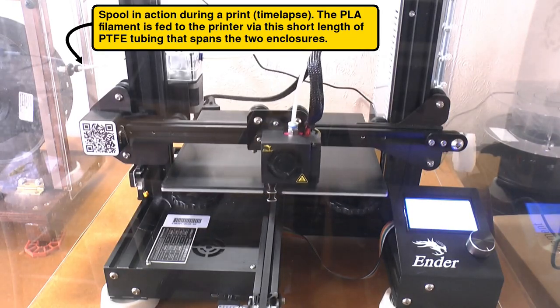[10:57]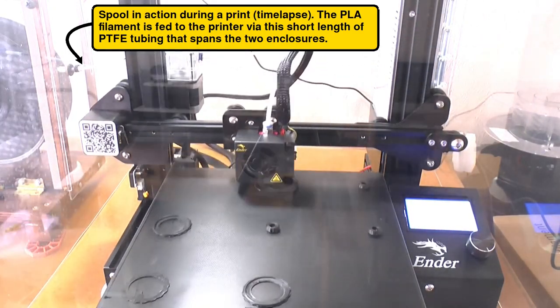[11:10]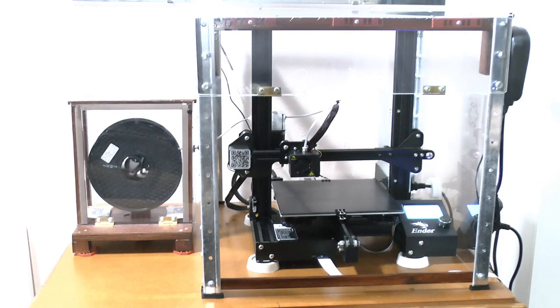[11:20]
I use PLA or polylactic acid filament for my prints, which is not very sensitive to moisture accumulation, but if you use ABS plastic, that is much more sensitive. I also keep the spool separate to the printer. The traditional setup for an Ender 3 is to have the spool bolted on to the printer frame, but I don't like that because it exaggerates vibrations during printing, and vibrations can cause ripples on the print. For the same reason, to dampen vibrations, I support the printer on these rubber feet. There are various other mods I've made, but, as I said earlier, I'll leave discussing mods for a separate video.
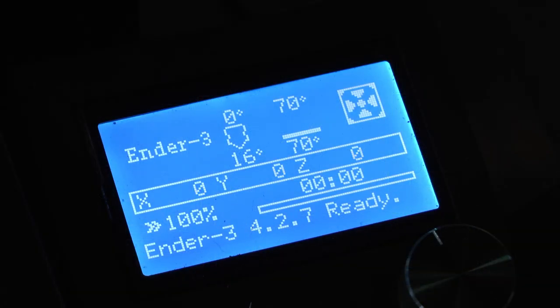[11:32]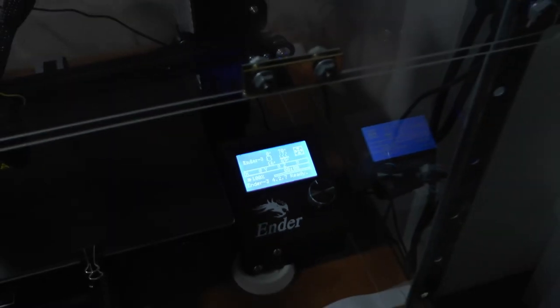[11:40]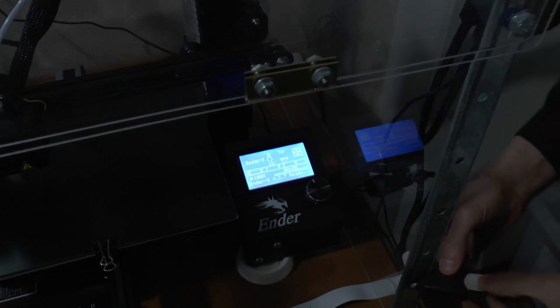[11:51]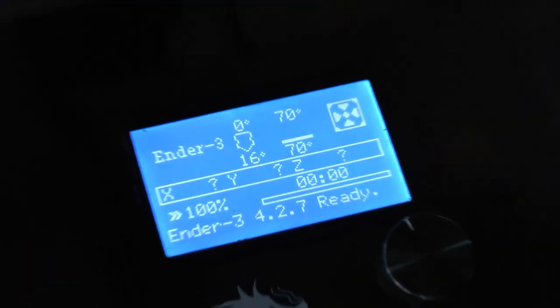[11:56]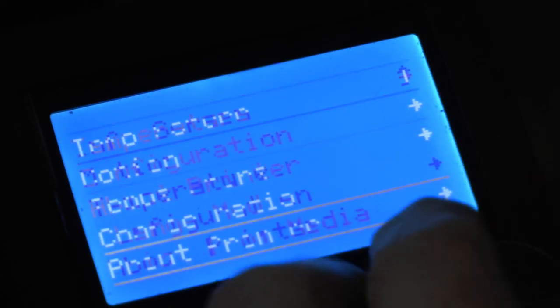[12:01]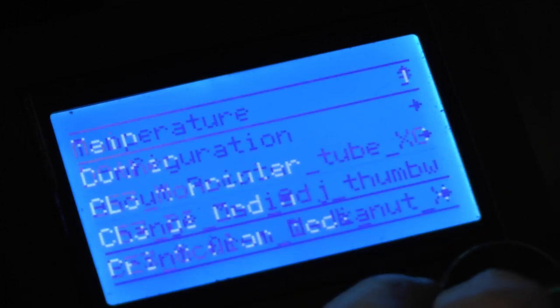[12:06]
So, I've had the printer on and heating the print bed to 70 degrees C for 5 to 10 minutes to ensure that the heat has had a chance to evenly permeate the whole print bed. This helps ensure good adhesion and also minimizes warping of the print bed. I now insert the memory card into this extension socket that dangles out of the enclosure. We can now set the print operation in action via the control panel as shown. So first I'll refresh the software's reading of the card because we've inserted this card just now. Now I navigate to the model I want to print and select it, then confirm I want to print it,
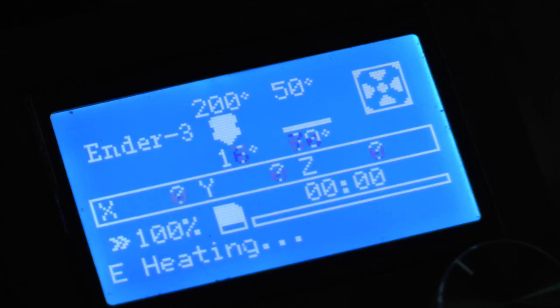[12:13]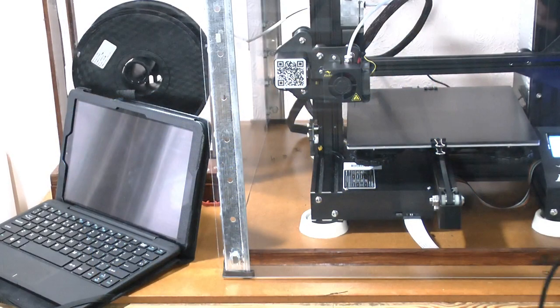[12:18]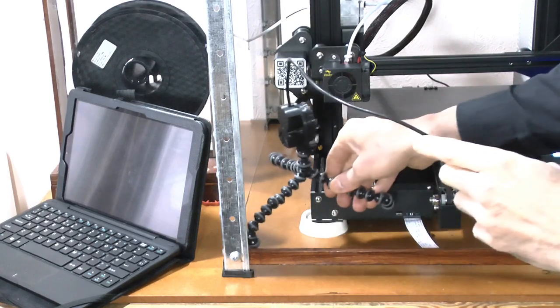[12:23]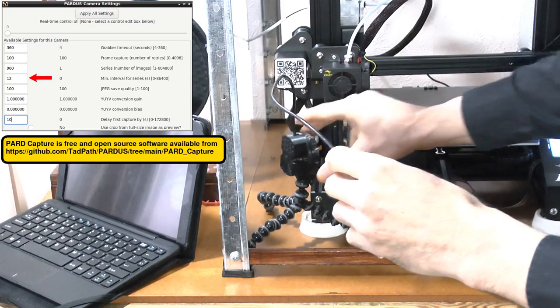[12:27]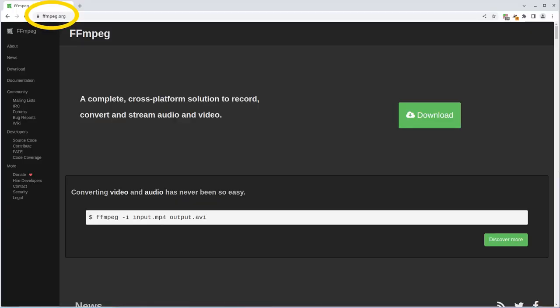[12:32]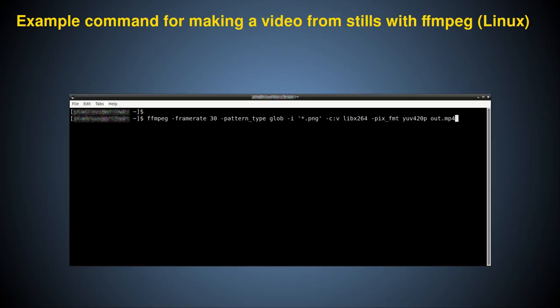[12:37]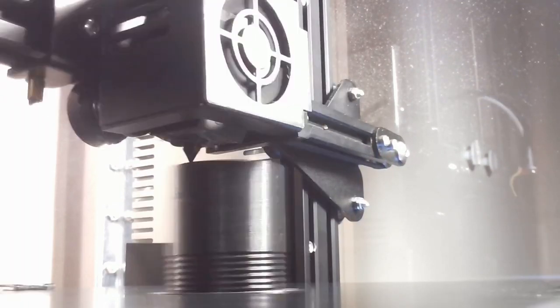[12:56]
The speed is such that you are seeing 3 hours of printing in about 30 seconds. You can clearly see how the monocular tube is printed layer by layer from the print bed up. When finished, we leave the whole thing to cool down, because when cool, the plastic no longer sticks to the print bed and we can easily remove it.
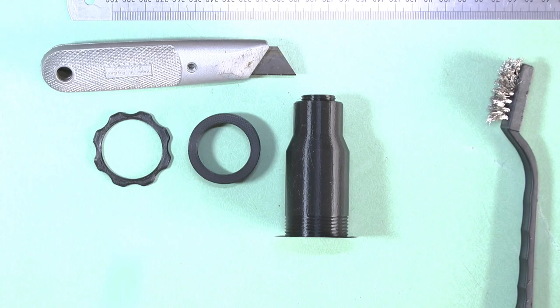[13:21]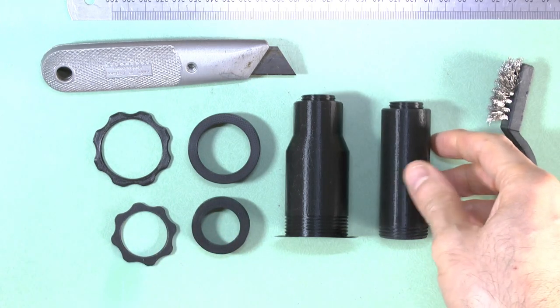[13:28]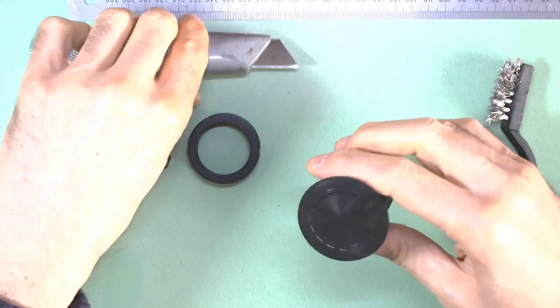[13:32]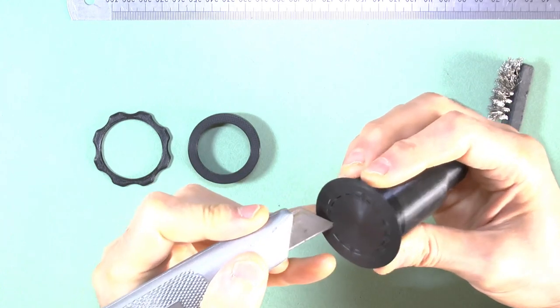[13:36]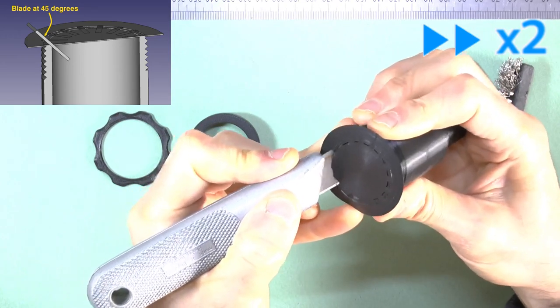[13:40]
So here are our modified parts, and if we compare them to the originals, you can see the difference in shape and diameter. As with the original models, when the parts come off the printer, you must first remove any supporting structures, such as the adhesion here. Note that I am angling the blade at about 45 degrees as I do this.
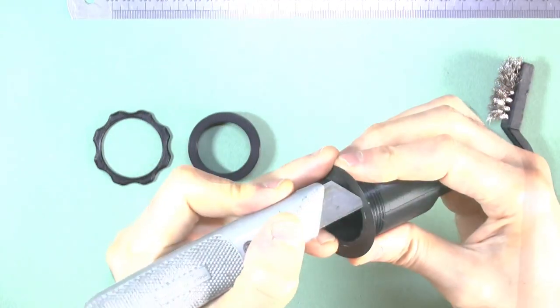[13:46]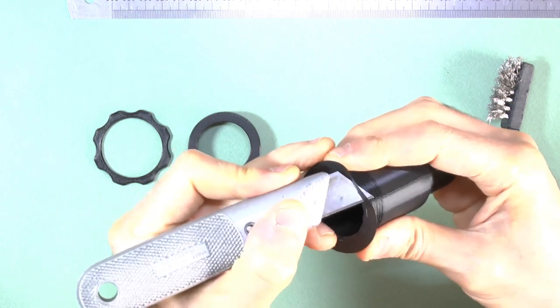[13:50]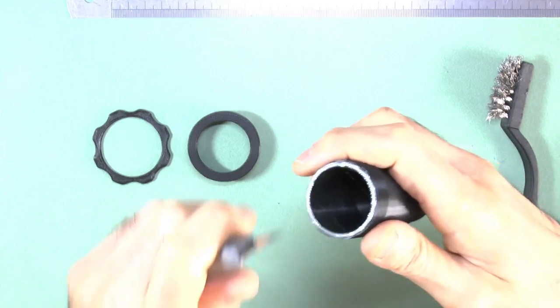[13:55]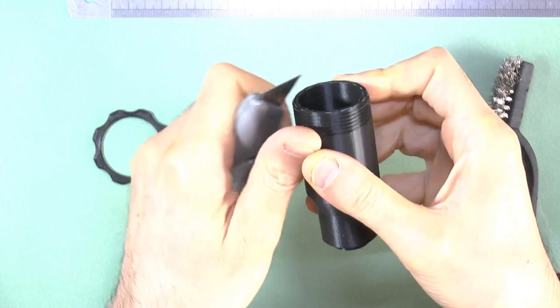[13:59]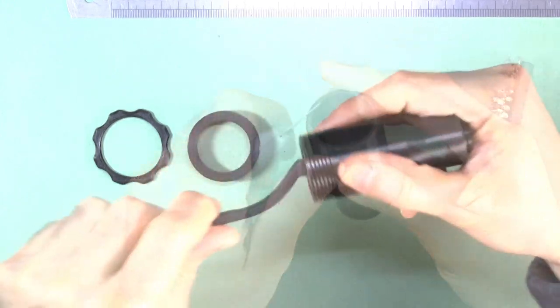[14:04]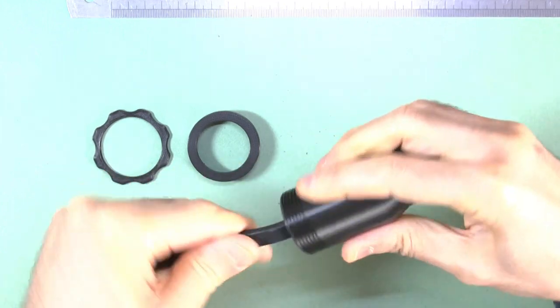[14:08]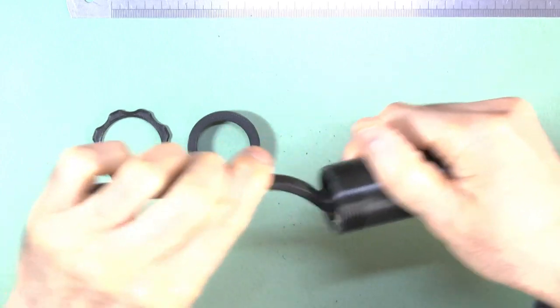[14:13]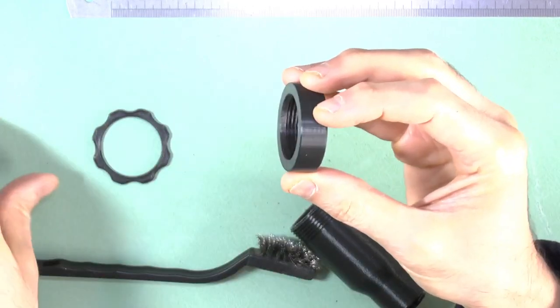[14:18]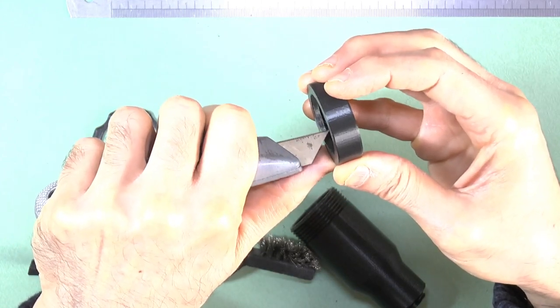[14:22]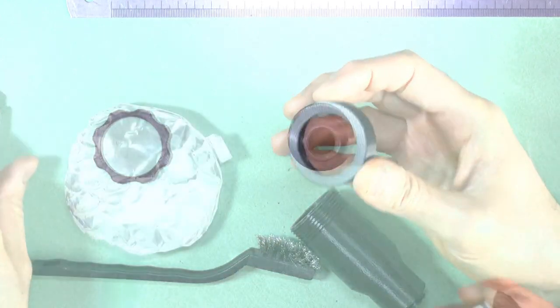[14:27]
Once removed, scrape the remaining surfaces to get rid of any stubs of plastic. Brush and scrape all the models to remove any stray plastic threads, etc. Pay particular attention to the seam on the inside of the ocular cap, or the fit of the eyepiece sleeve might be too tight due to this one spot, and it could damage the coating on the sleeve of your eyepiece if you don't smooth it out properly.
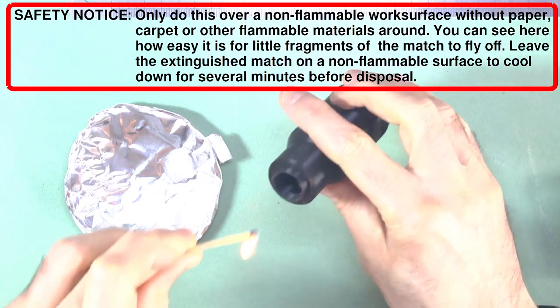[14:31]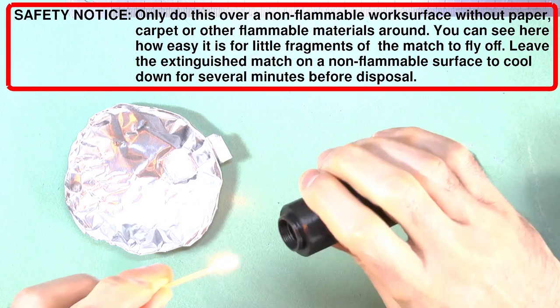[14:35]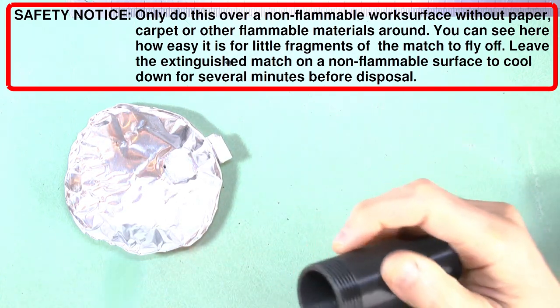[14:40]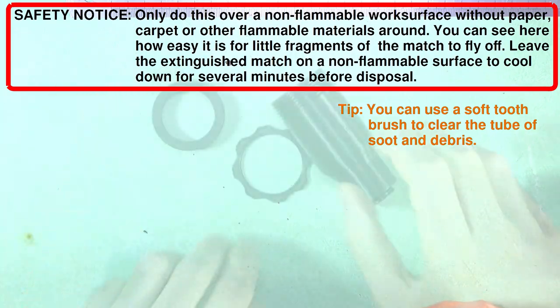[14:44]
If there are any tiny plastic threads left in the monocular tube, I burn them off with a quick passage of a naked flame. But this must be very quick or you will deform the internal light baffles and apertures. Clean away all soot and any debris from this operation afterwards.
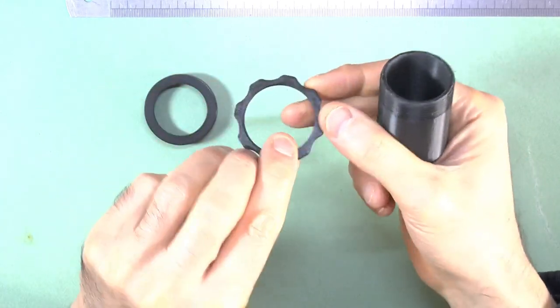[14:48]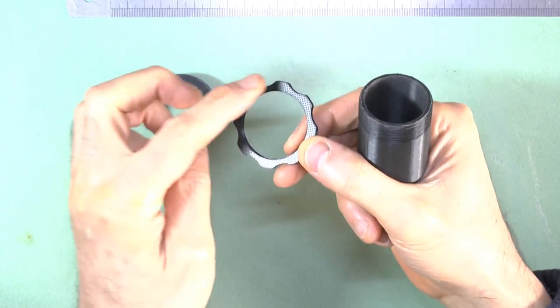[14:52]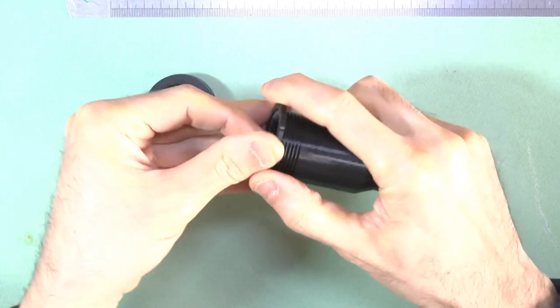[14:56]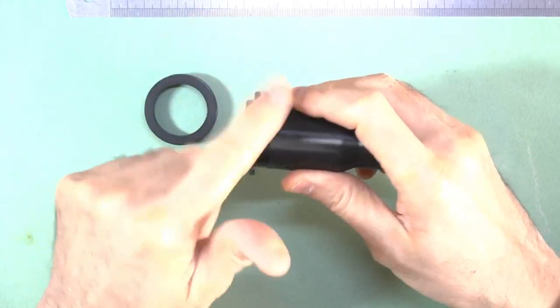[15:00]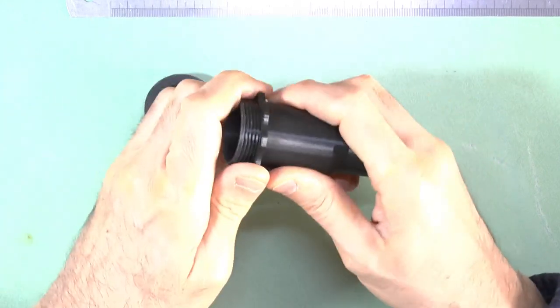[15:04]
Now, when it comes to assembling, you put the lock nut on first. This is the top surface, and this is the print bed surface. Put it on with the print bed surface first, and that goes all the way down. Next, thread the ocular cap on all the way down, like this.
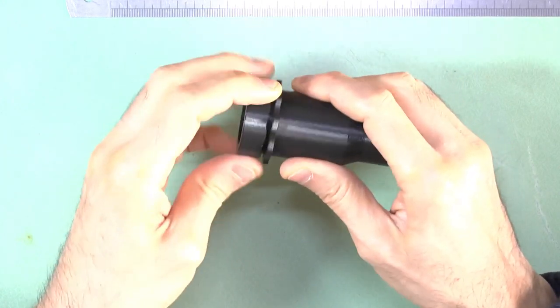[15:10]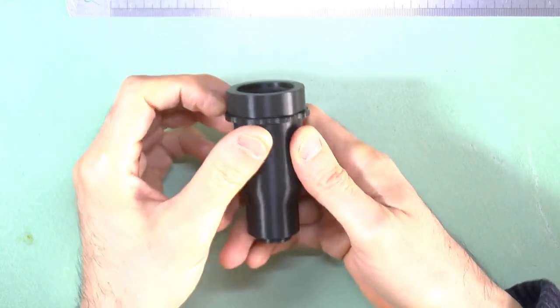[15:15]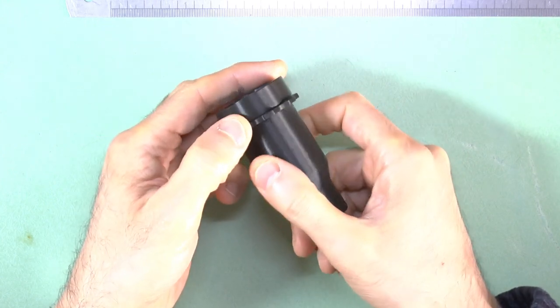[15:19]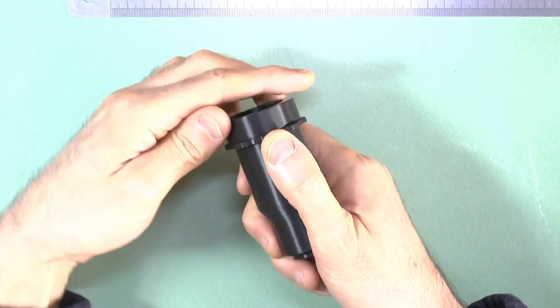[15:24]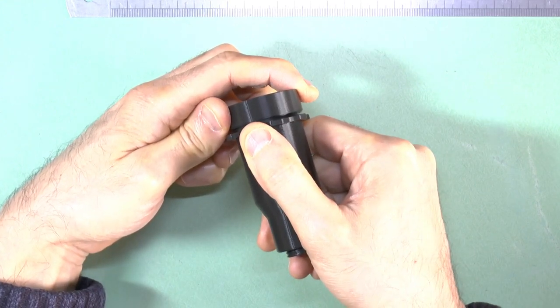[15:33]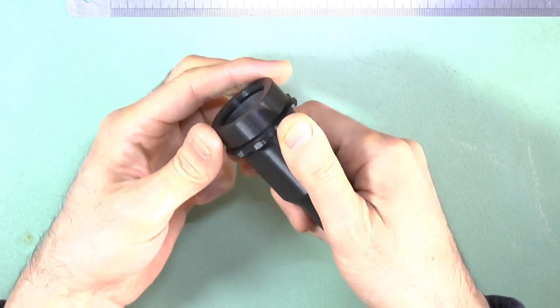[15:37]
Then, you should locate the seam on the cap. Here it is, and mark its position. I'm using my thumb to do that. Then unscrew the ocular cap by one full turn until you see the seam come round again. This will set the default ocular cap gap, or OCG, to 2 mm, as you see here. Now fix the cap in place with the lock nut as shown.
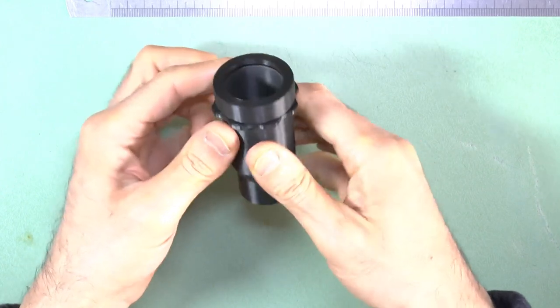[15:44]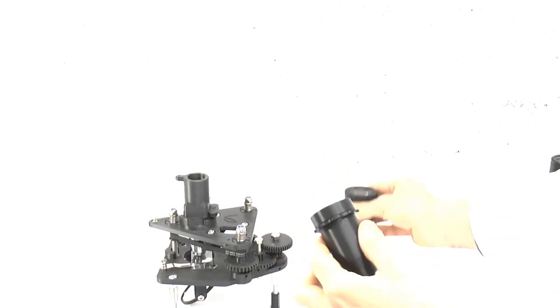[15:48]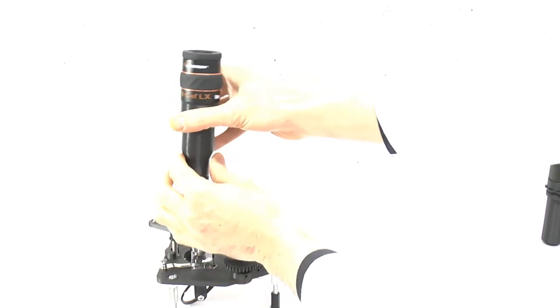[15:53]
And that's it. The new tube is now ready to accept the eyepiece, so you insert it like so, and attach the tube to the top of the filter block, like so.
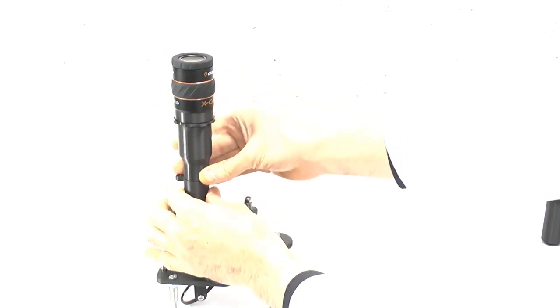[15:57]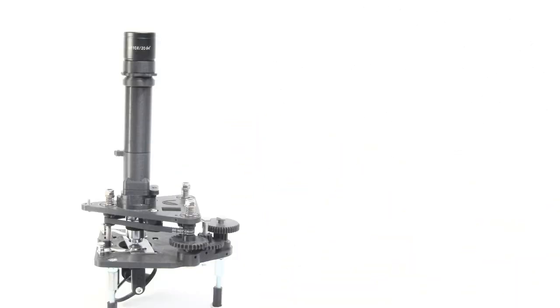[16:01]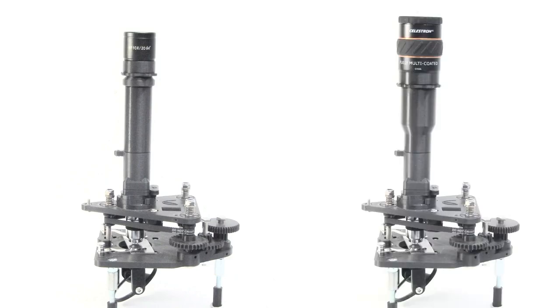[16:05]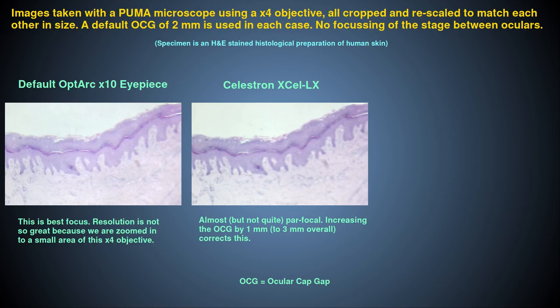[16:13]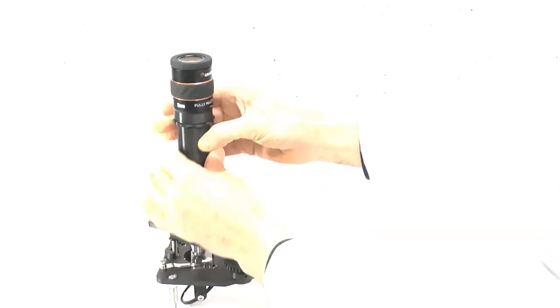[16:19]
Here is the standard Puma with a 23.2 mm microscope ocular, and here is our modified version with the Celestron XCel-LX. I can confirm that the image is almost parfocal when you swap these monocular tubes, so this tells us that we got the measurements of the focal plane of the Celestron eyepiece correct to a practical degree of accuracy.
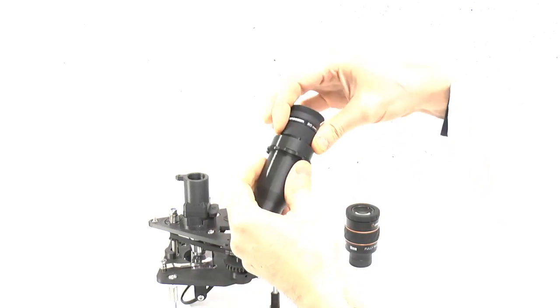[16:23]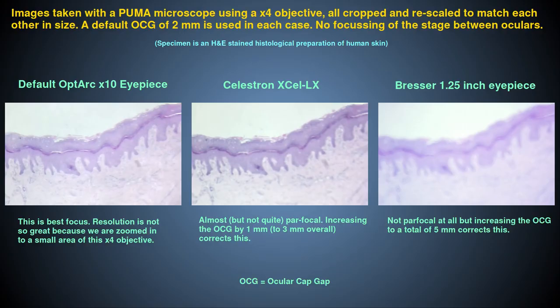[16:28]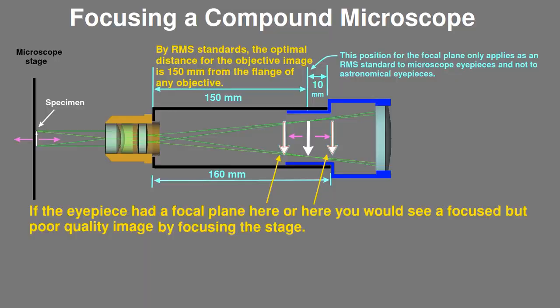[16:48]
If instead I insert this Bresser astronomical eyepiece, it will fit okay, but the image is out of focus, confirming that one size does not fit all when it comes to using astronomical eyepieces with microscopes because of the lack of a standard position for the focal plane of astronomical eyepieces, as I explained in the first video. Fortunately, there is enough adjustment in the ocular cap gap mechanism to compensate for correct use with this Bresser eyepiece.
Remember from my last video that if we just focus the microscope stage to fix this problem, then we will get a focused image, but the quality of the image will be suboptimal. So, to properly use an eyepiece with a different focal plane, we need to make any adjustment to the position of the eyepiece relative to the objective, not the position of the stage relative to the objective.
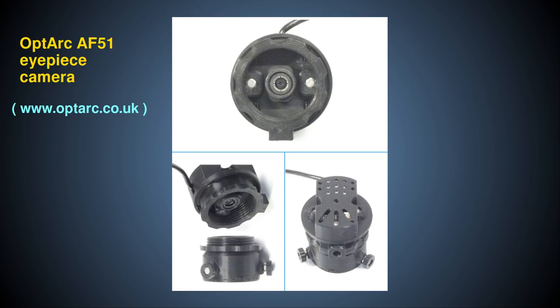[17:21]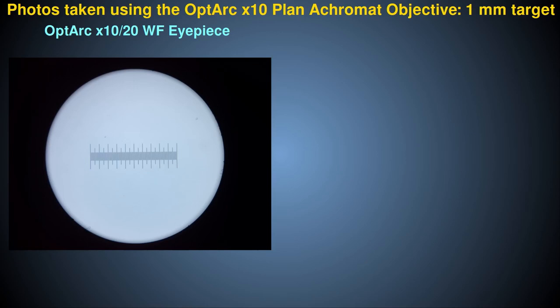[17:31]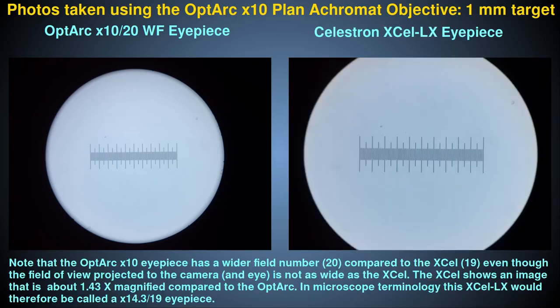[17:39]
In this section, I'll show some images taken with the standard x10 OptArc eyepiece compared to the Celestron, using the OptArc AF51 eyepiece camera. This camera was designed to give a whole circular field of view with the OptArc x10 wide field microscope eyepiece, as is shown on the left. By comparison, note the extra wide field of view seen with the Celestron. This has the limitation of not showing the whole field of view, but the advantage of using more of the camera chip surface for usable image features.
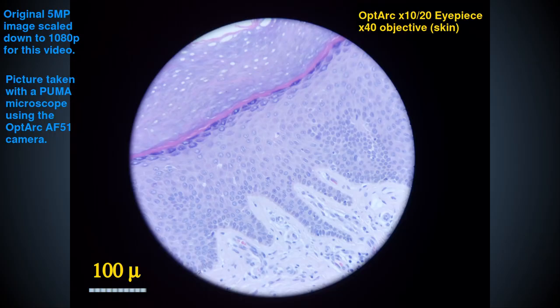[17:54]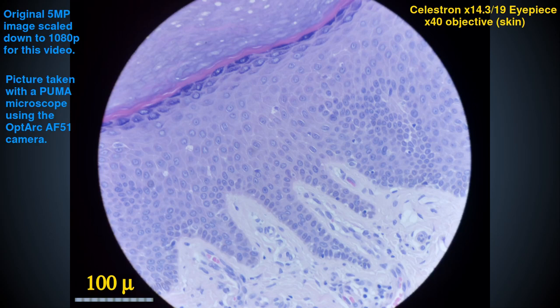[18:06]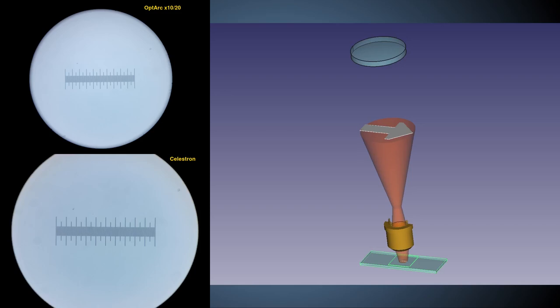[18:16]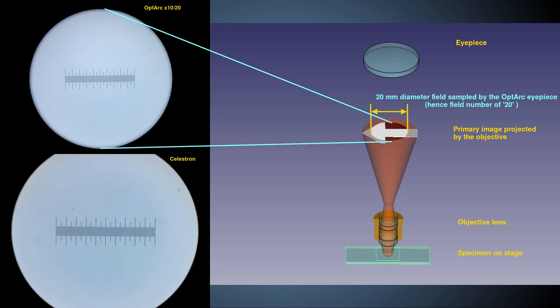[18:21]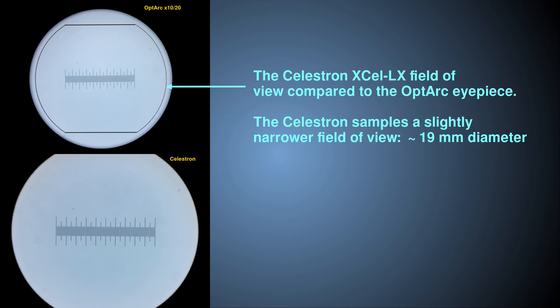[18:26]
Now, here is a picture of a stained histological section of human skin with a dry x40 OptArc planachromat objective using the OptArc eyepiece. And here is the same slide imaged with the Celestron eyepiece. The Celestron eyepiece shows reasonably good planarity and color correction across the field. Note that the Celestron samples slightly less of the field of view compared to the OptArc, about 19 mm field for the Celestron, compared to the full 20 mm field for the OptArc eyepiece.
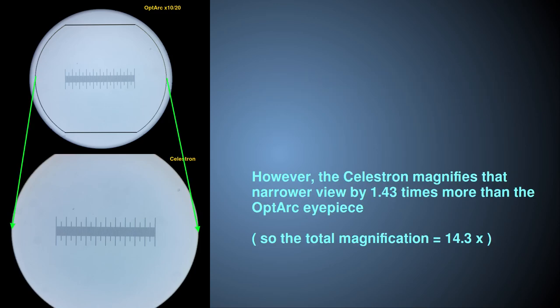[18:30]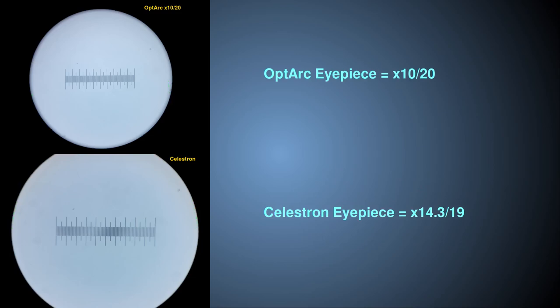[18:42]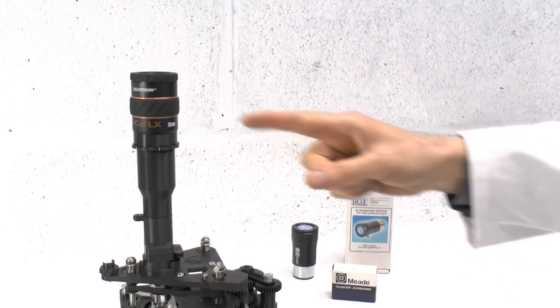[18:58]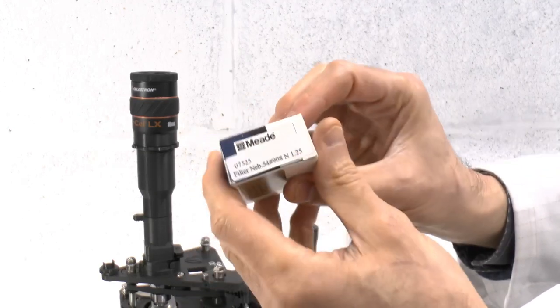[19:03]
But the Celestron magnifies that slightly smaller field by a larger magnification factor, about 1.43 times more magnification than the OptArc eyepiece. Thus, in microscopy terminology, the Celestron is a x14.3 eyepiece with a field number of 19, and so would be denoted like this, x14.3/19. Now that we have the facility to use 1.25-inch astronomical eyepieces, we can make use of some other astronomical
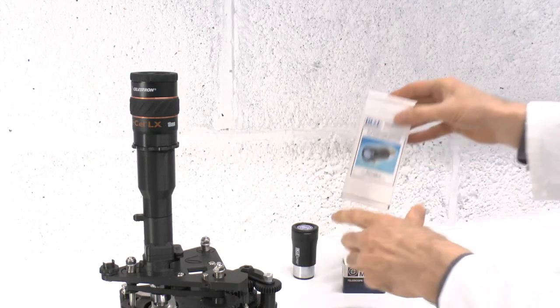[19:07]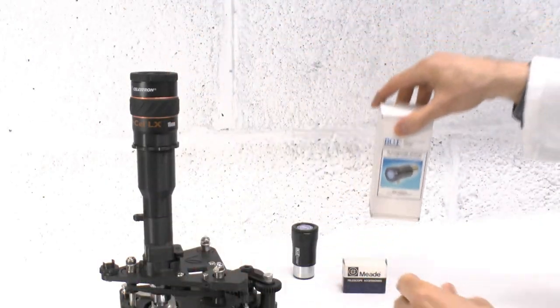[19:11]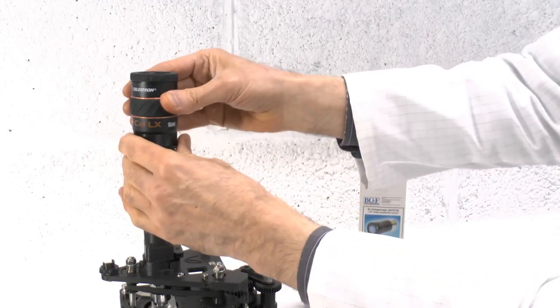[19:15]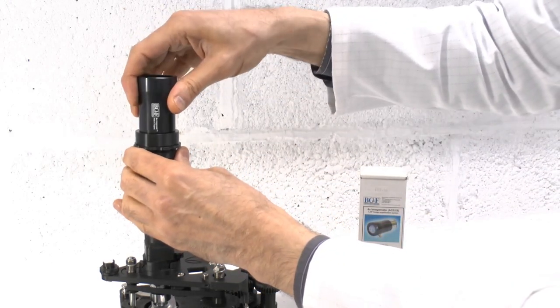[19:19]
optics, such as filters, and in this case, a Barlow lens. This one is a x4 magnifier. You fit the Barlow in between the objective and the eyepiece as shown, so the Barlow gets inserted first as if it were the eyepiece, then the actual eyepiece is inserted into the Barlow.
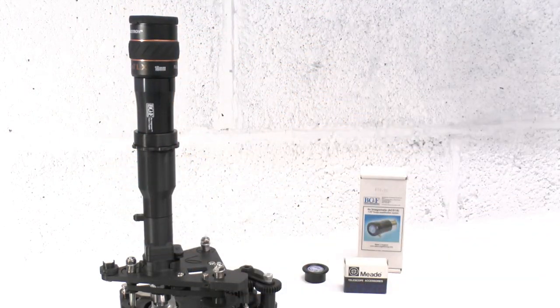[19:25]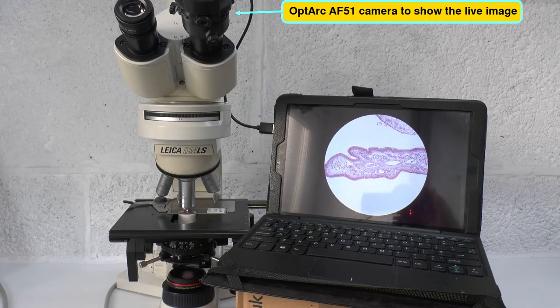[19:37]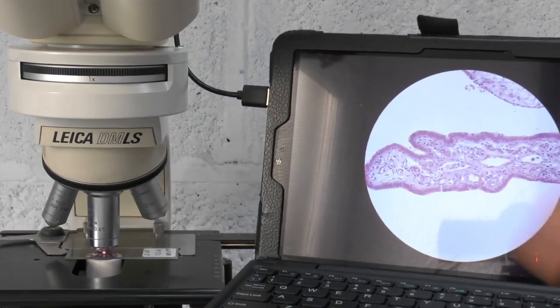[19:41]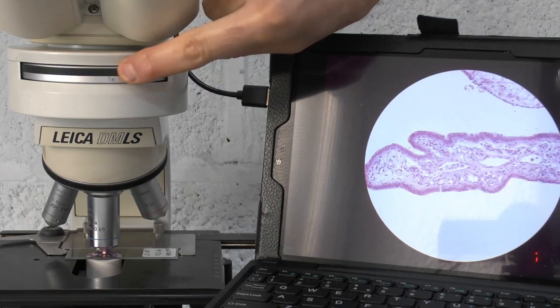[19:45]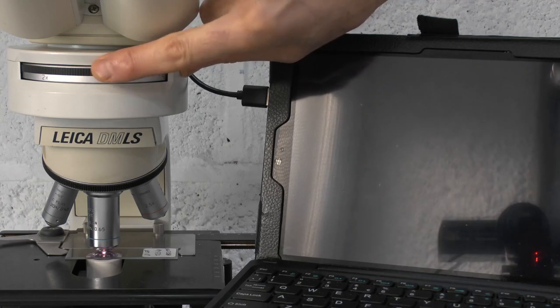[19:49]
Now, Barlow lenses are not uncommon in microscopy. It's just that microscopists tend to know them as mag changers rather than Barlow lenses, but they are essentially the same thing. Here, for example, is a commercial Leica DMLS microscope with a Leica mag changer turret containing a range of Barlow lenses that can be easily interchanged to give a magnification of up to 2 times that produced by the objective alone.
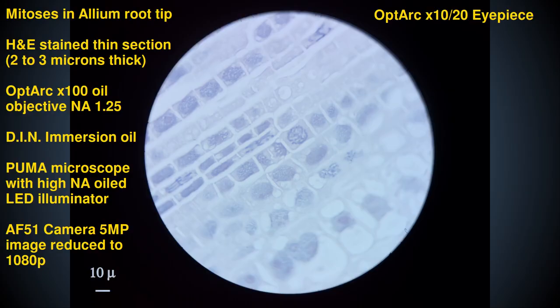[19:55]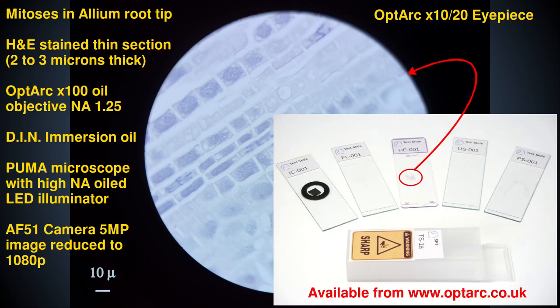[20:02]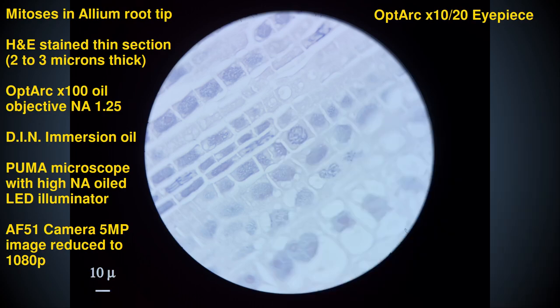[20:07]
Here are some images of mitotic chromosomes taken with a PUMA microscope using the OptArc x10 eyepiece. This is from a slide in the commercially available OptArc test slide set and is of an H&E stained histological thin section of an allium root tip. The picture is taken using an OptArc 1.25 numerical aperture oil immersion objective with DIN standard immersion oil, and the objective has ×100 optical magnification. The total optical magnification is therefore ×1000 to an observer looking down the scope by eye.
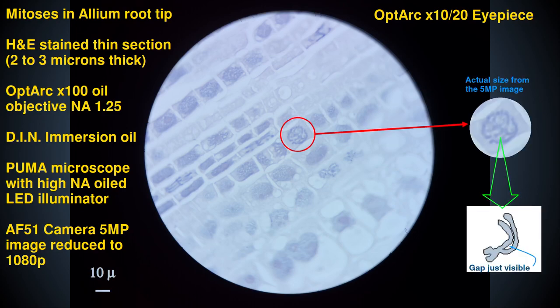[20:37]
But the scale bar shows the effective magnification in this recorded image. Note that you can just about resolve the gap between sister chromatids in some of the chromosomes, such as in this acrocentric chromosome here. Note also that because this is a thin histological section, you will not see all the chromosomes neatly spread out in full, as you would with a cytology or squash preparation. So the chromosomes here are overlapping, and many will be only partial, having been sliced during microtomy. And the tissue processing will of course cause some shrinkage, so they are difficult to make out individually, but this diagram gives an indication of what you are seeing here.
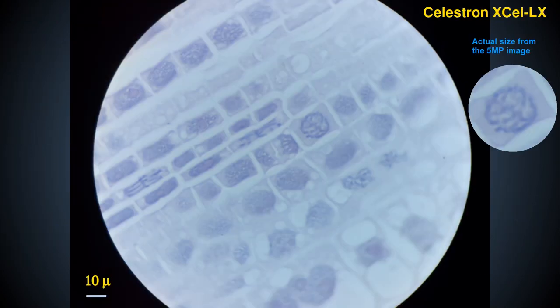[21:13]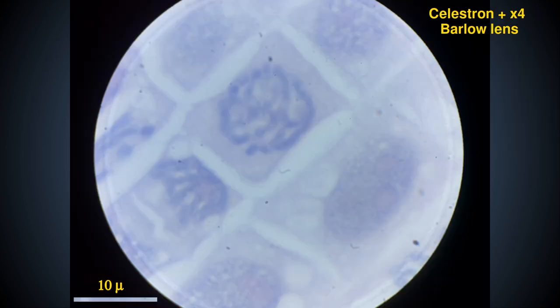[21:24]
And here is the same setup, but using the Celestron eyepiece with its 14.3 times magnification, making a total optical magnification of 1,430 times. Now, here is the same setup, this time using the Celestron eyepiece in conjunction with the ×4 Barlow, giving a total optical magnification of 5,720 times. Despite the increase in optical magnification, we don't actually see more detail. The blurriness in this highly magnified image is due partly to diffraction blur, in addition to some out-of-focus blur due to the very narrow depth of field of oil immersion optics.
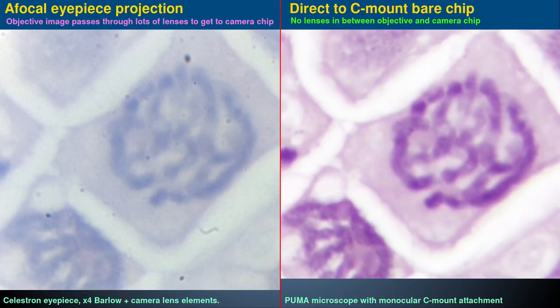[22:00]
Also, I would add here that if you want to image at or above the limit of resolution, this is not the best way to do it. For that, I would prefer to use direct chip projection to a bare chip camera, rather than pass the image through all these lenses. But for the purposes of this comparison, I must use eyepiece projection afocal photography, with all the degradations and aberrations that method produces in passing the image through multiple glass lens elements.
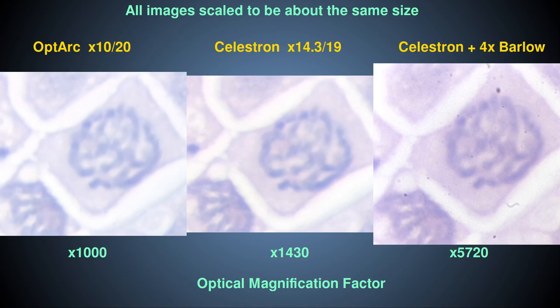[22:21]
For ease of comparison, I have cropped out this small region from all three images and digitally scaled up the lower magnification images to be the same size as the largest optically magnified image. I've also enhanced the images digitally to make features more obvious for this illustration. The one taken with the OptArc eyepiece is on the left. The one taken with the Celestron on its own is in the middle, and the one taken with the Celestron and 4x Barlow is on the right.
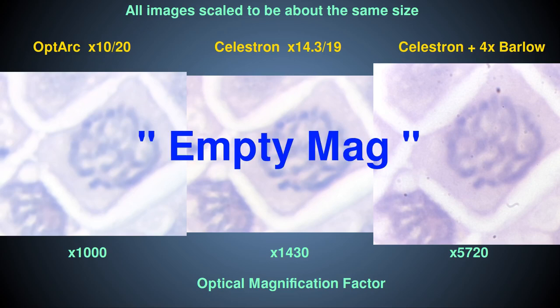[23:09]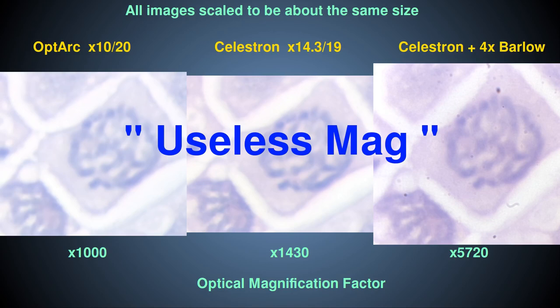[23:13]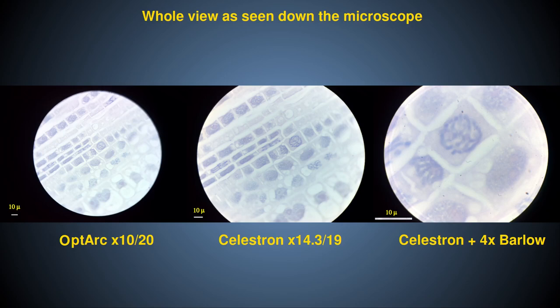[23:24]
As you can see, the amount of extra detail seen with extra optical magnification using above-objective optics is actually negligible because the primary image from the objective has already reached the traditional Rayleigh limit of optical resolution with this oil immersion setup. Thus, the additional magnification stages just make this already diffraction-limited image bigger. This is what is known as empty mag, or useless mag, amongst microscopists. Although it is not necessarily useless for all purposes, as I might explain in future videos. So I don't like the term useless mag. For one thing, such magnification can make features easier to see by eye during live viewing down the scope, as opposed to image recordings.
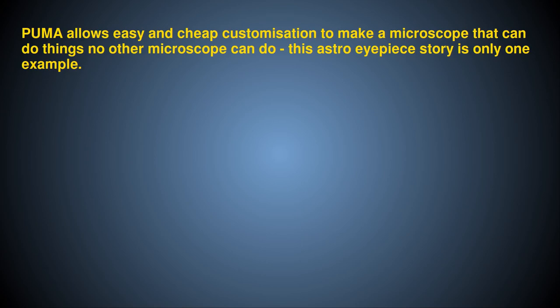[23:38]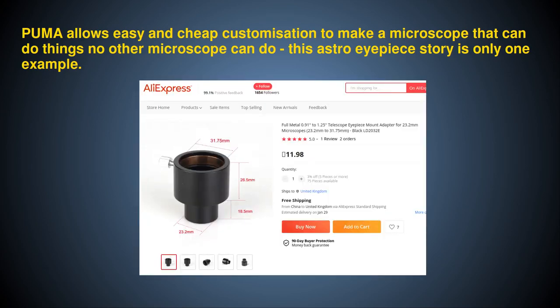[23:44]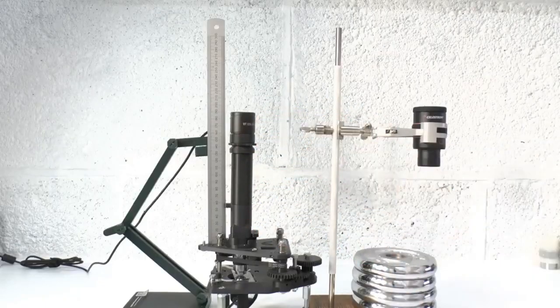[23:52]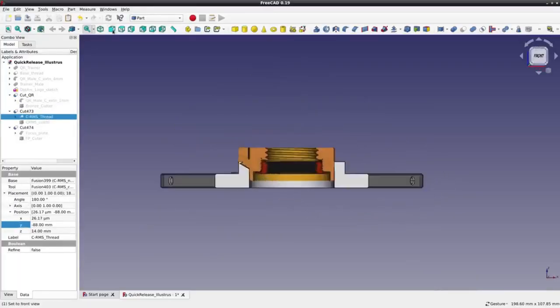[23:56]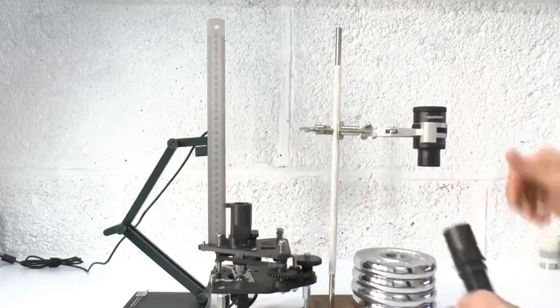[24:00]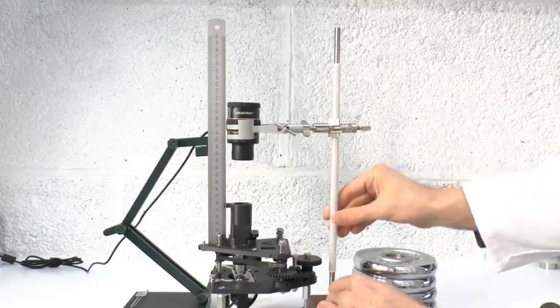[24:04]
Now, as far as I know, there are no commercially available microscopes that accept 1.25-inch eyepieces. Yes, you can buy cheap 23.2mm to 1.25-inch mechanical adapters like this one, but I hope this video and the last one has shown you why simply changing the diameter of a tube is not sufficient for proper use of a 1.25-inch astronomical eyepiece in microscopy. So such adapters are of limited use.
I hope these videos have also given you an idea of the power and usefulness of PUMA being a fully customizable, high-quality biological microscope, and even more so one that is open source and rapidly modifiable with free software and low-cost 3D printing.
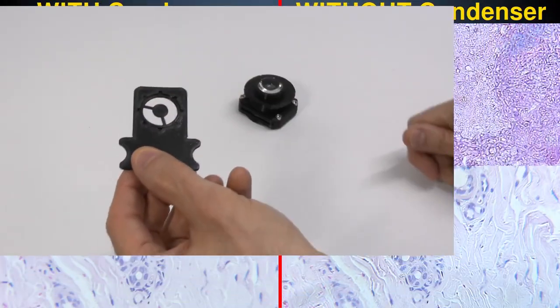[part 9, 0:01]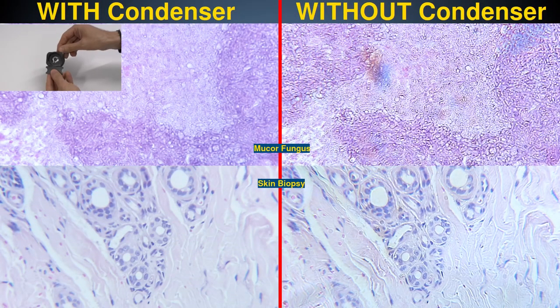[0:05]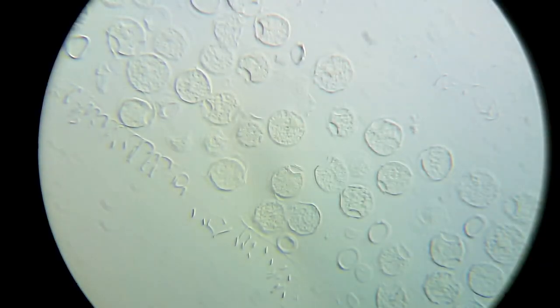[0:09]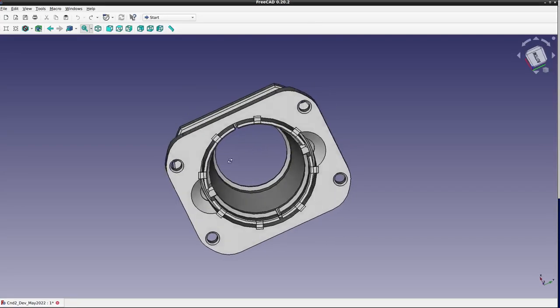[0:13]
The PUMA Abbe Condenser sets PUMA apart from other 3D printed microscopes by providing high quality illumination and easy optical Fourier filtration. In this video, I'll explain some updates to its design that make it easier to build and increase its functionality.
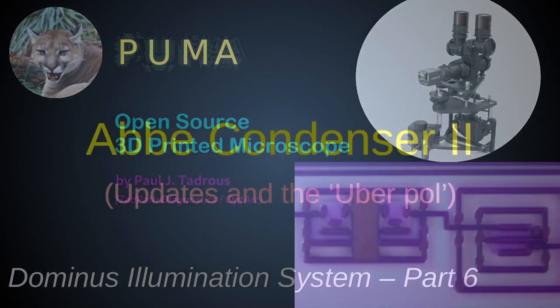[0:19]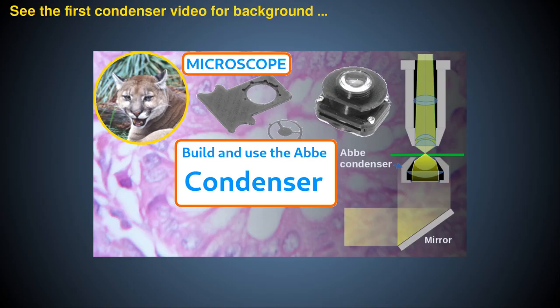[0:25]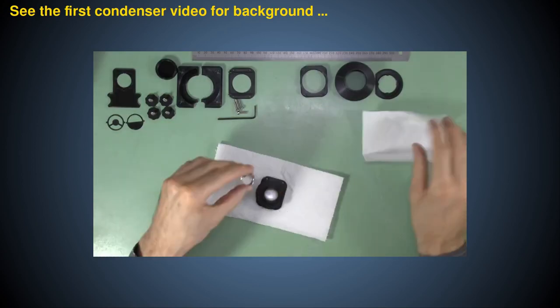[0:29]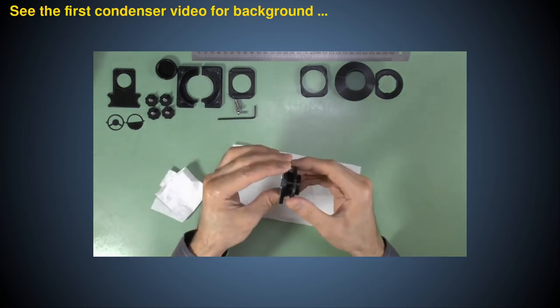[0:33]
In the first condenser video, I explained the importance of an Abbe condenser for professional quality microscopy and showed you how to build one. If you want to build a PUMA Abbe condenser, please see that video first, because most of the things mentioned there still hold true and will not be repeated here.
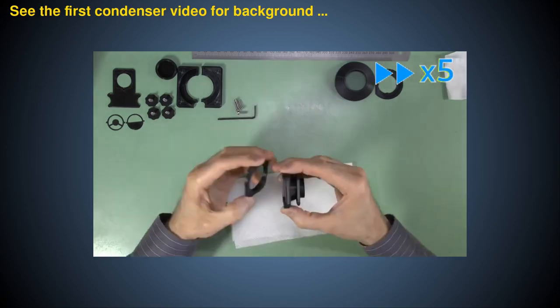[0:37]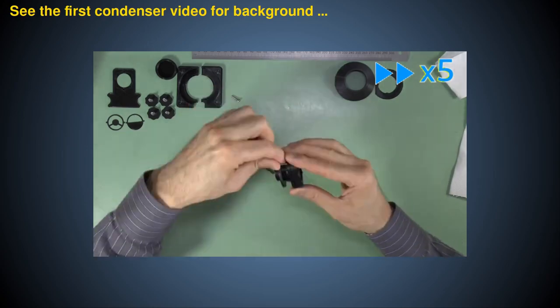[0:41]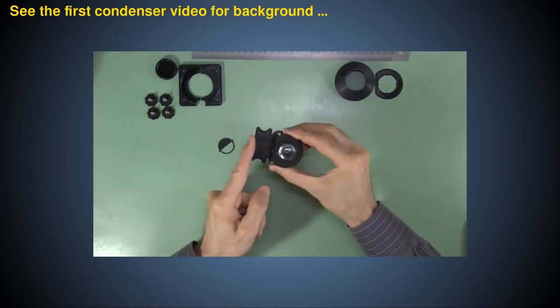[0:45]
Thanks to feedback from users and my own experiences, I've identified some features of the original design that would benefit from modification and further explanation. So that's what I'll be discussing in this video.
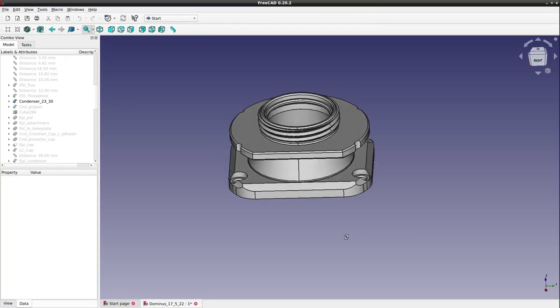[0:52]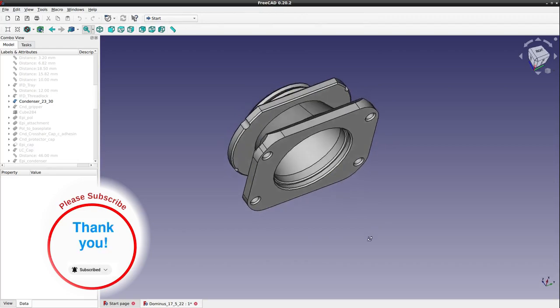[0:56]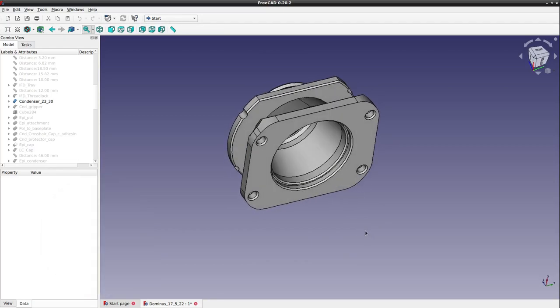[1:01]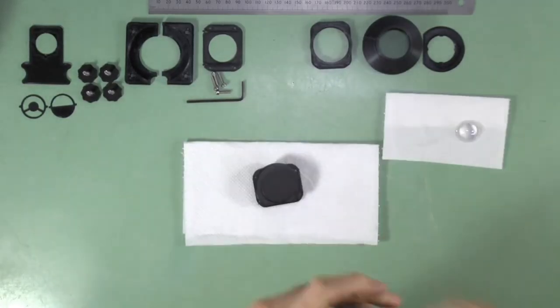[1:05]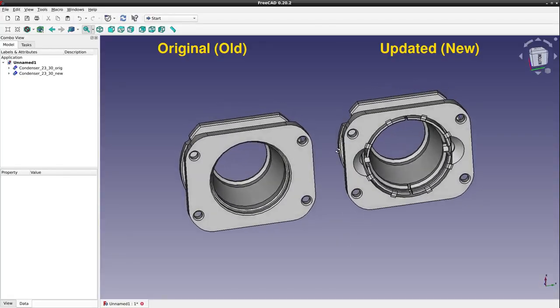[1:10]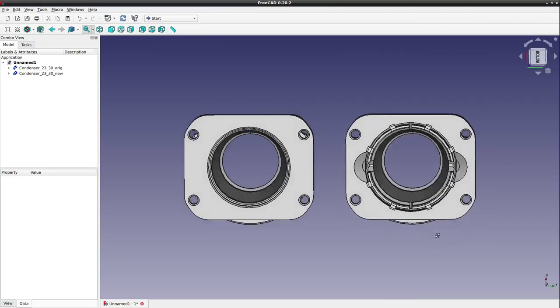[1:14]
The original receptacle for the lower lens of the condenser used a rigid force-fit recess. With hindsight, this was not the best way to design it, due to the wide tolerances of low-cost 3D printing, and you could see me struggling to get the lens in place in the first video. So, I've redesigned the receptacle for the 30mm lens. As shown here, this now has a moat-like recess and flexure joints to make the receptacle flexible. This allows for slight variations in diameters.
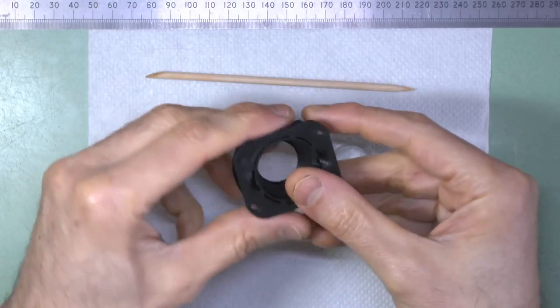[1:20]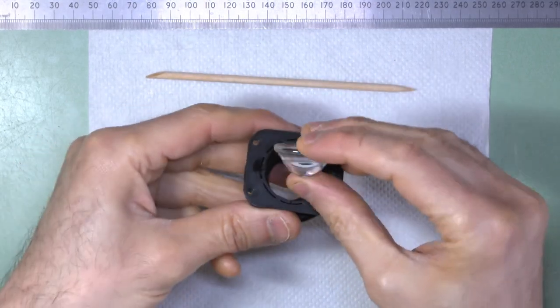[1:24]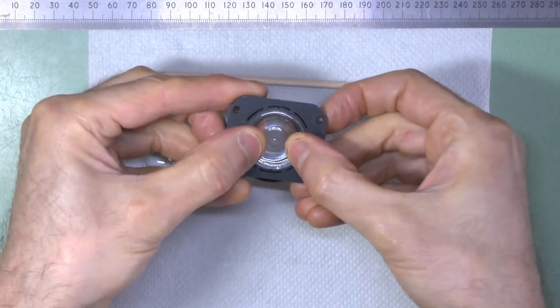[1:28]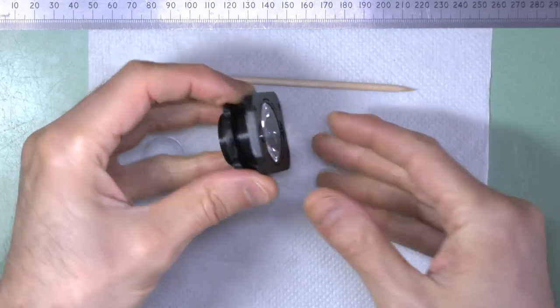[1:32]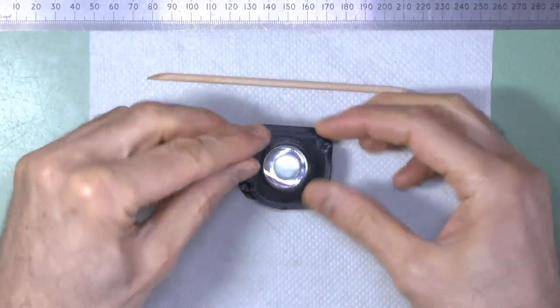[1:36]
The lens easily fits into this without much force, and it is held tight by the spring action of the plastic. This new design also easily accommodates both the original 30mm lens as well as the newer versions which are currently being sold. I'll say more about the different versions of the lenses in the next section.
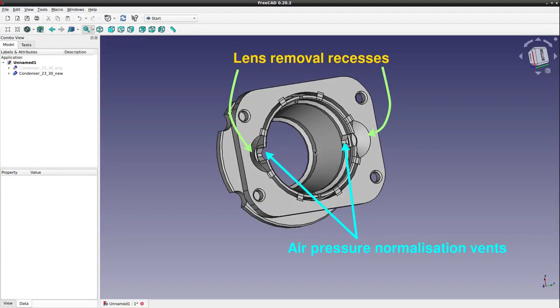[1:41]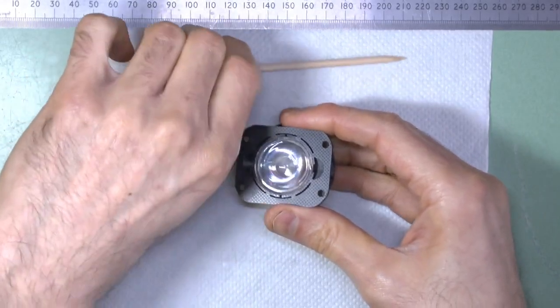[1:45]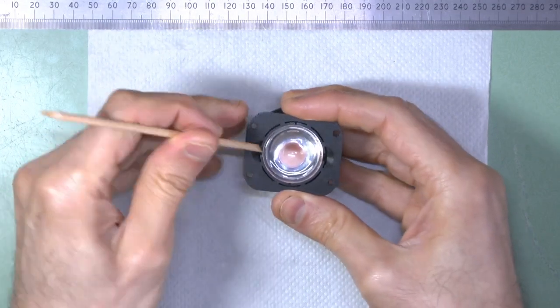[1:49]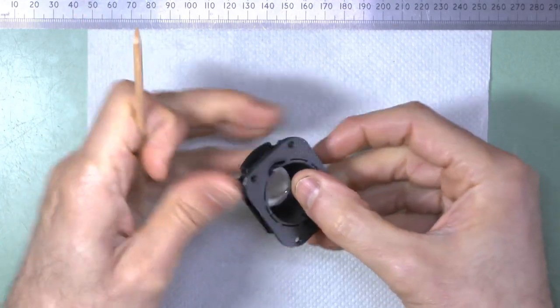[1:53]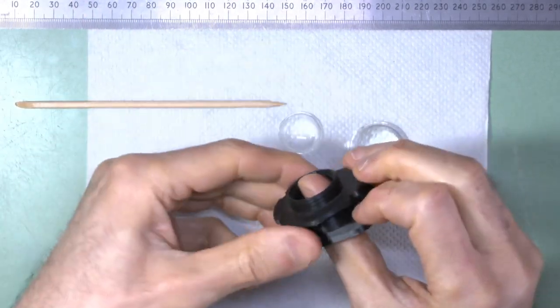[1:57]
Another change to the design are these two recesses, which allow a user to easily pop the 30mm lens out with a stick if they need to clean the inside for any reason or just change the lenses. With the bottom lens removed, the top lens can also be popped out by applying pressure from underneath. The original design had no easy way to remove the lenses short of heating and deforming and so destroying the plastic housing.
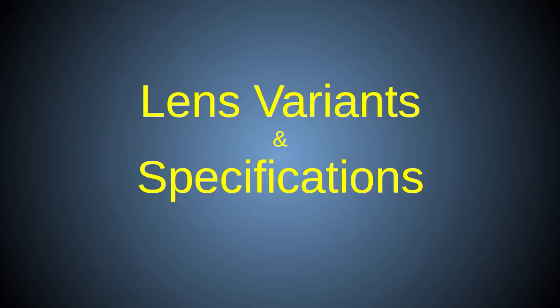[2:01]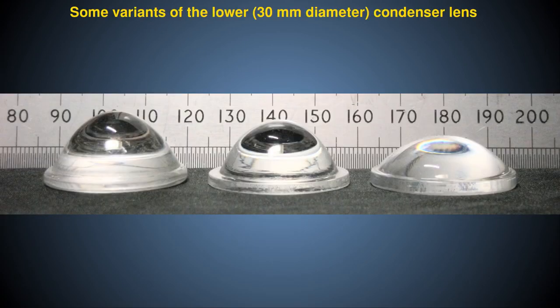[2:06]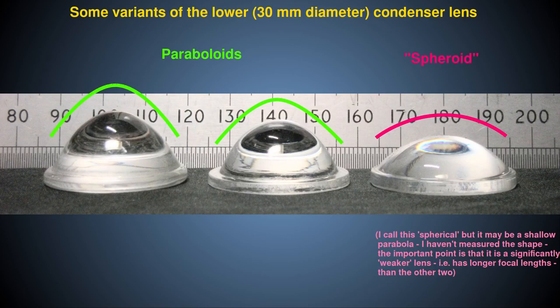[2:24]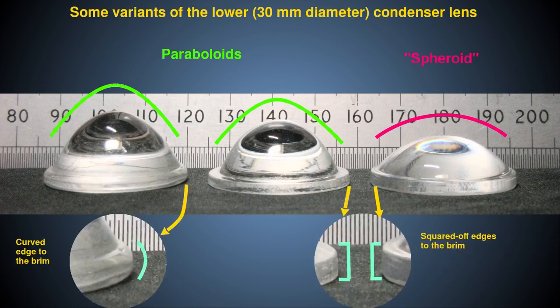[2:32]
It has come to my attention that the lenses used in the Abbe condenser are available in slightly different sizes and shapes from various manufacturers, and some of these have the wrong optical properties to make a good Abbe condenser. For a start, there are at least three forms of the lower 30mm lens, as shown here. Two of these are parabolic, and one has a shallower spherical dome shape. Also, for one of the lenses, the brim has curved sides, but in the other forms, the brim has squared off straight sides. The new 30mm socket I described earlier will fit all of these.
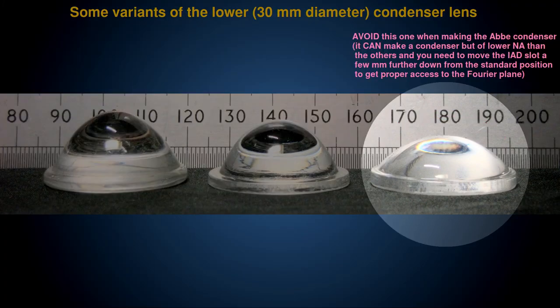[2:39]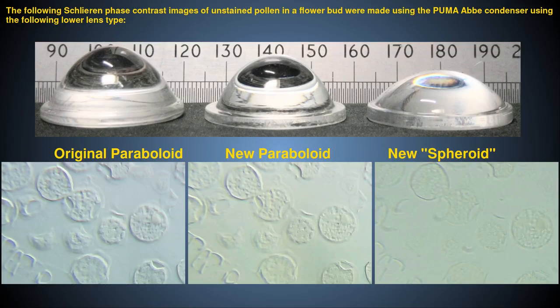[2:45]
However, this one with the spherical rather than parabolic surface is not suitable for use because it is too weak a lens with too long a focal length and will not give you proper access to the Fourier plane of the scope or high numerical aperture illumination. So you should avoid using this spherical version of the lens.
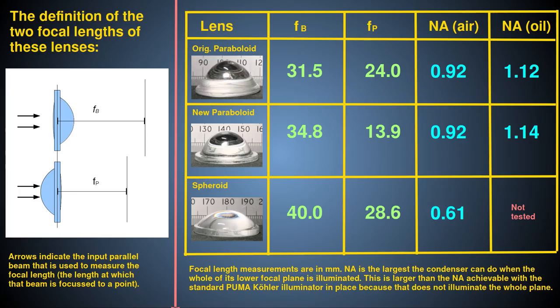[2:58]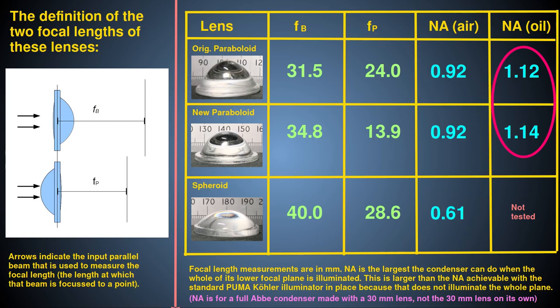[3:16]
As for the parabolic lenses, although one has a slightly longer focal length than the other, they both give good results in terms of numerical aperture and access to the Fourier plane, so either may be used. You can see that they both achieve essentially the same numerical aperture of about 0.92 dry and 1.1 oiled. If you want to achieve even higher numerical aperture illumination, you'll need to use the dedicated PUMA High Numerical Aperture Illuminator, which I'll describe in another video.
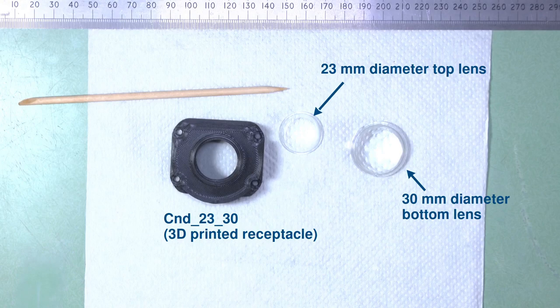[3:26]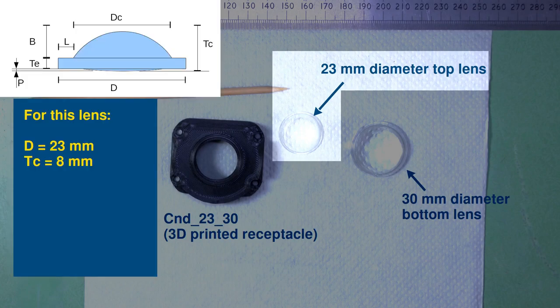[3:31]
I've also learnt that there are some variants of the smaller 23mm top lens. In particular, that there are some that are 9mm thick instead of the 8mm thick lenses that I use for both the PUMA condenser and lower collector. I've been told that the 9mm tall lenses don't fit the enclosure properly, they poke out of the top, and if the enclosure is modified to accommodate them, they don't work well in terms of giving access to the Fourier plane. I don't have any of those taller, thicker lenses to experiment with, so I can't give you focal length differences, but the original 8mm tall lenses have the focal length characteristics shown in the figure, and I recommend you stick to those.
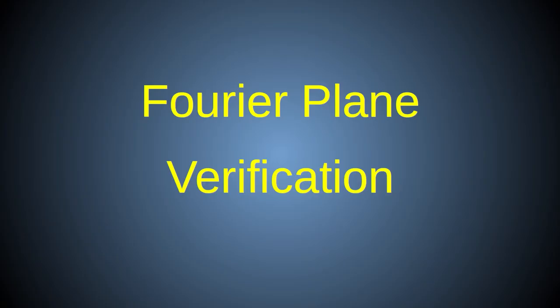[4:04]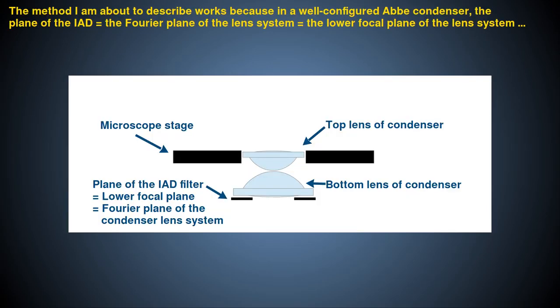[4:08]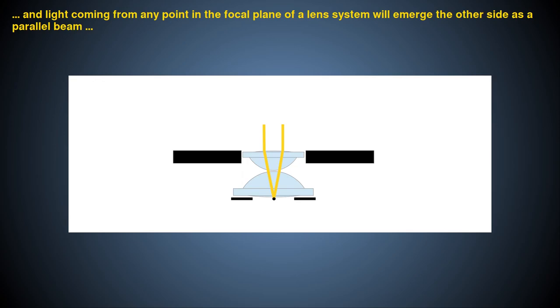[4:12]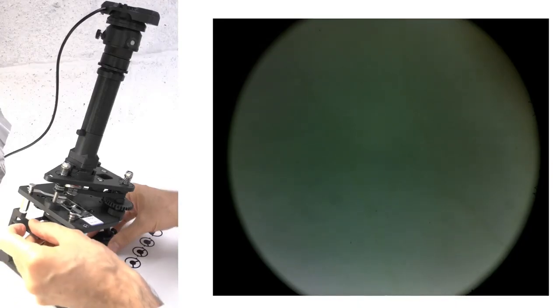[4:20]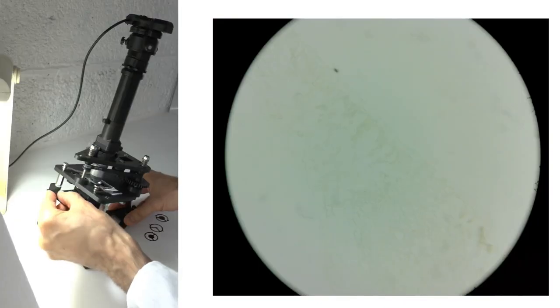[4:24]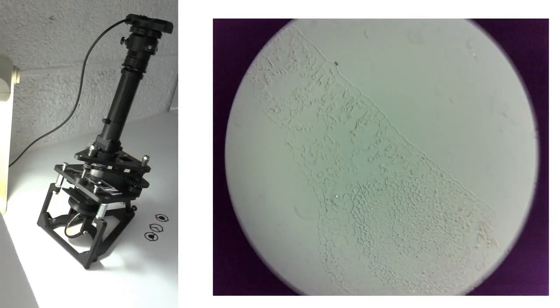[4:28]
As I don't have personal experience with all the variants of these lenses, I thought it useful to give you a short tutorial on how you can check for yourself whether your condenser is correctly configured optically with whatever lenses you use. One of the key benefits of the PUMA Abbe condenser is the easy access it gives to the microscope's Fourier plane via the illuminated aperture diaphragm or IAD filter slot, so you can do optical Fourier filtration.
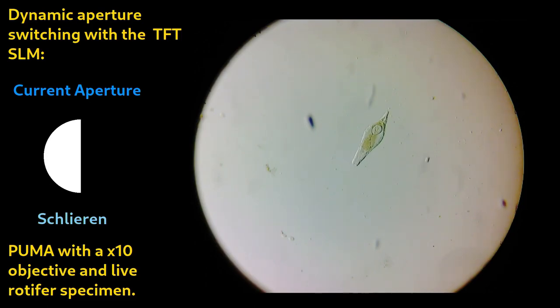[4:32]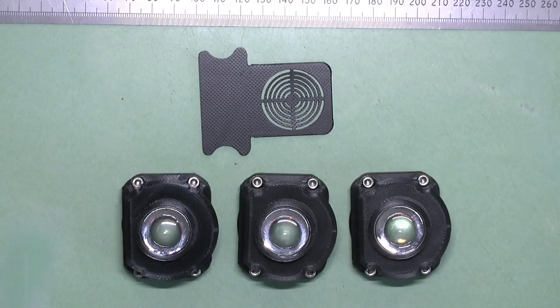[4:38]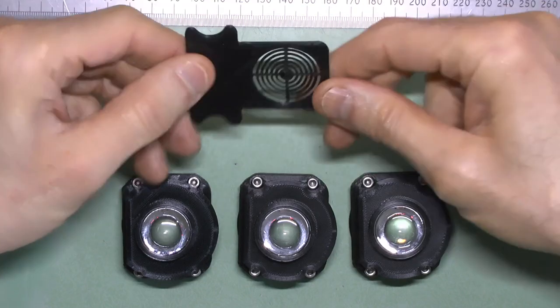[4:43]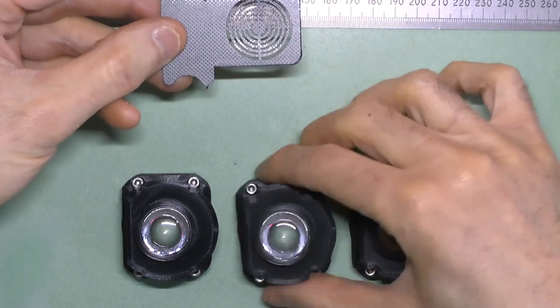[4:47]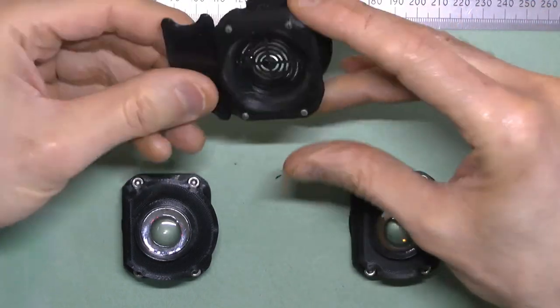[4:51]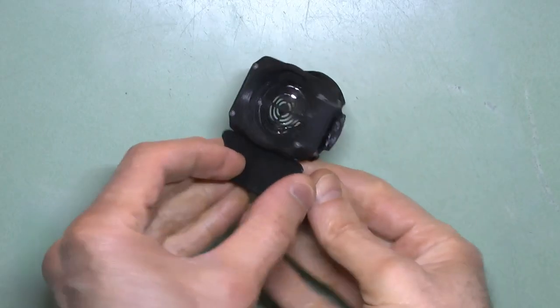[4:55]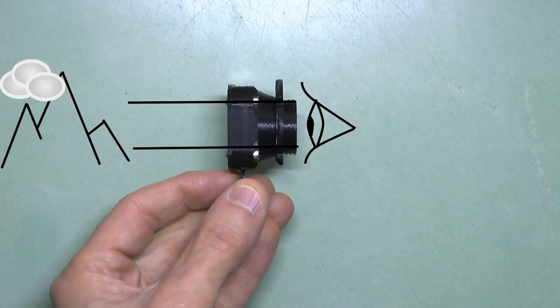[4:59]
In order for this to work, anything in the IAD slot must be at the combined focal plane of the two condenser lenses. To check that this is the case, first insert a filter into the IAD slot. I recommend you use the crosshairs filter that you would normally use for Köhler alignment. Ensure you insert it the correct way up as shown. Now look through the smaller 23mm lens with your eye close to the lens and with your eye relaxed as if you were looking into the far distance.
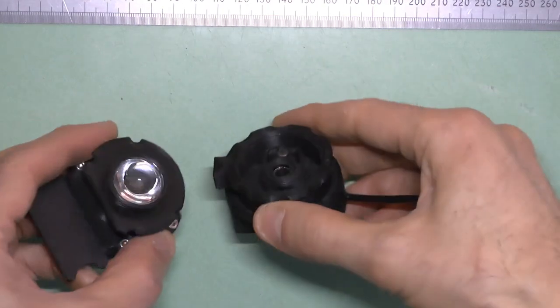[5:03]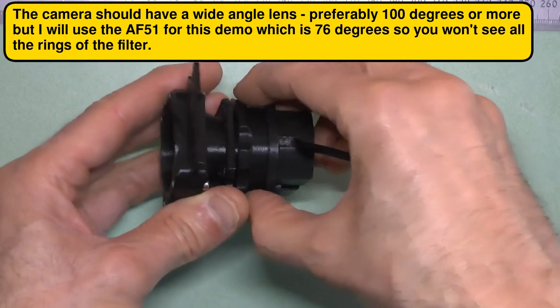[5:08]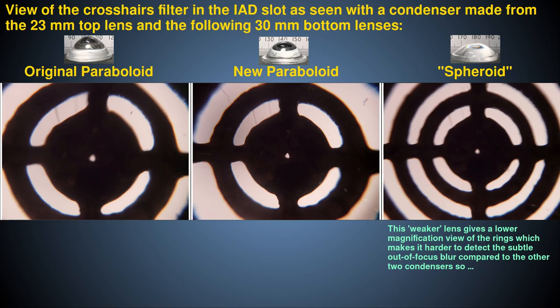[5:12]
You can alternatively use a camera to peer down this lens with the camera focused at infinity and with fixed focus, so the focus doesn't change no matter how close you get to the lens. If the structures of the filter look in good focus, then your condenser is correctly configured. If they're blurred, then it is not, and you may need to use different lenses or customize the housing to alter their positions. Note that because these lenses are not perfect, you will not see everything in perfect focus from the center to the extreme periphery. That's okay, as long as at least part of the field of view is in good focus.
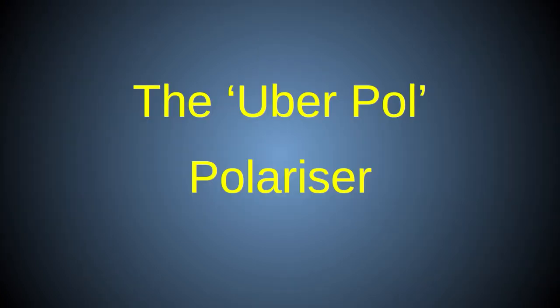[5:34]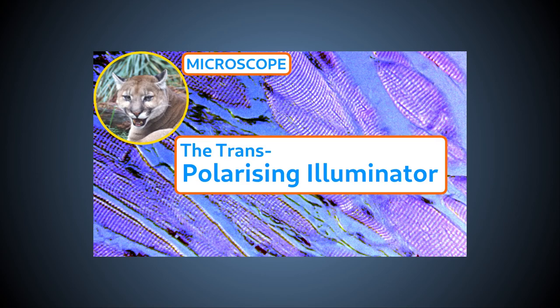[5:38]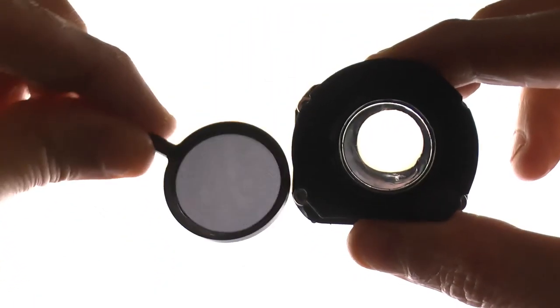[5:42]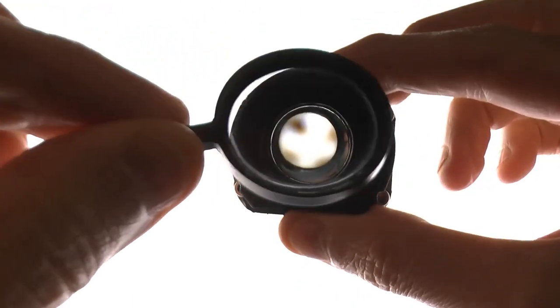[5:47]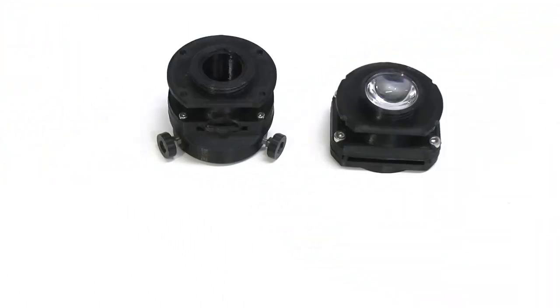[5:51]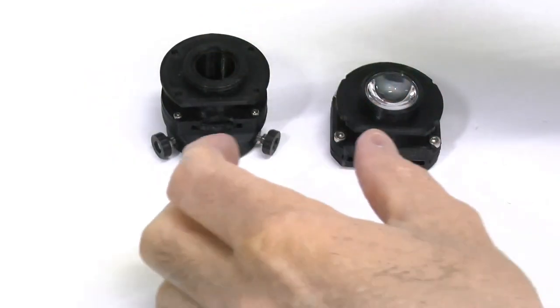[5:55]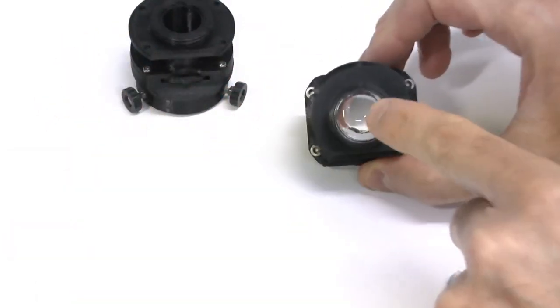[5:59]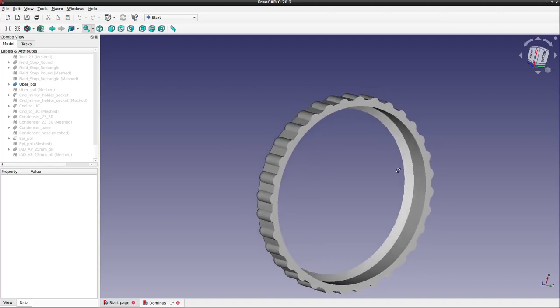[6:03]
Recall from the tutorial on the polarizing condenser that the reason I designed a separate module for polarization is that the molded glass lenses used for the Abbe condenser are anisotropic, so don't allow good extinction of the polarized light. Recall also that the polarizing condenser is a bit of a misnomer because it doesn't actually contain any condensing lenses, so only gives low numerical aperture illumination. To remedy this situation, I developed a new module, the Uber Pol.
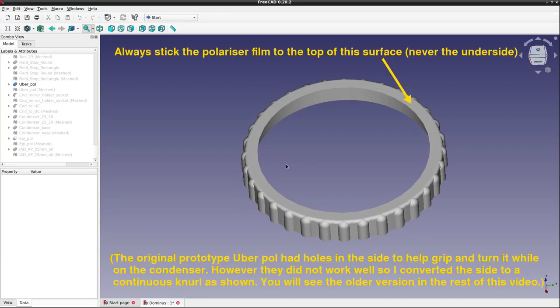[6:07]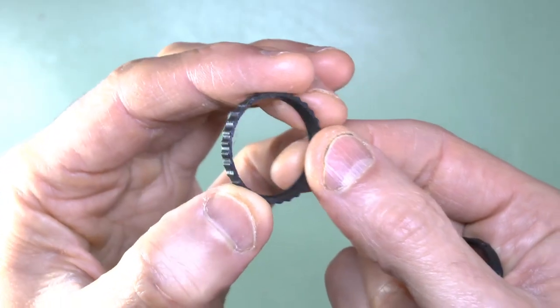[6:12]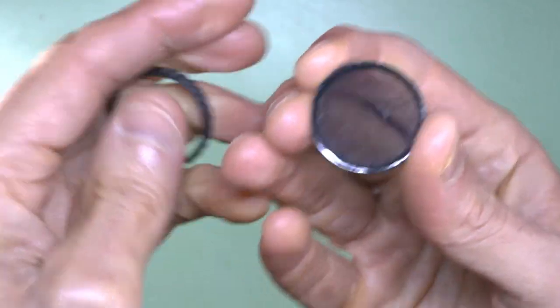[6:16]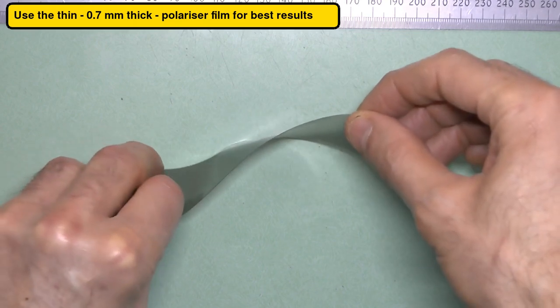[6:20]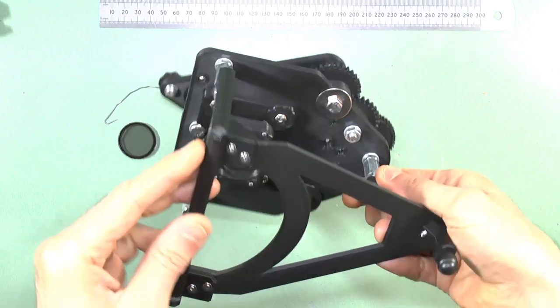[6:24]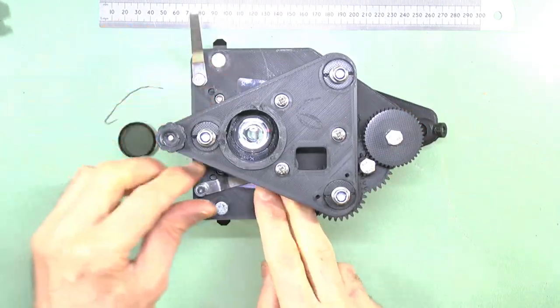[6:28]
The Uber Pol is a simple ring that is quick and easy to print. Once printed and cleaned up, you cut a disc of linear polarizing plastic and glue it to the Uber Pol ring, as shown. You should use the thinner polarizing film so it won't cause too much extra height to the top of the condenser when used. To use the Uber Pol, simply put it over the top of the condenser so it sits between the condenser and the underside of the specimen slide.
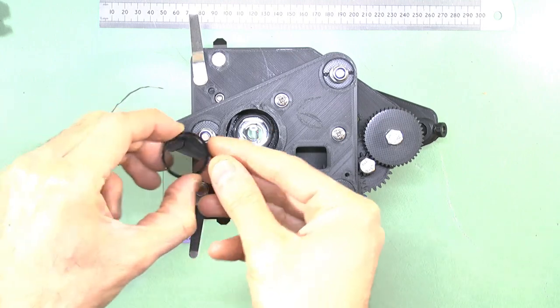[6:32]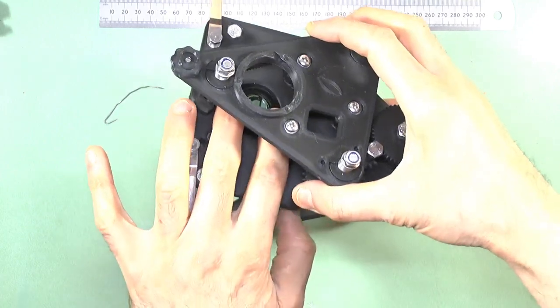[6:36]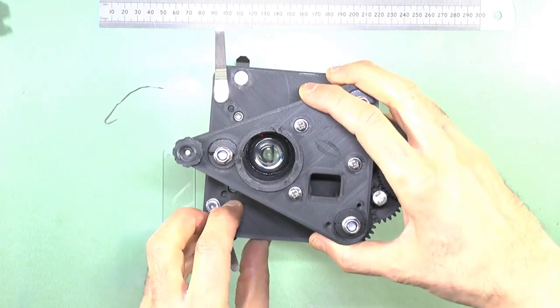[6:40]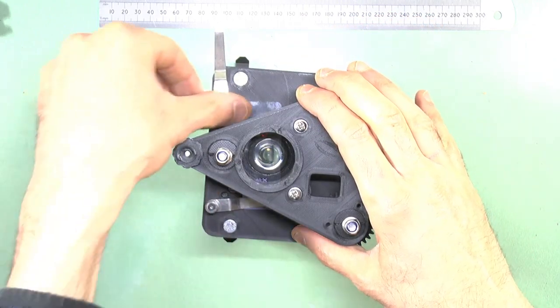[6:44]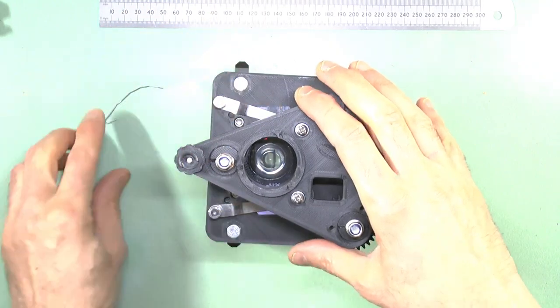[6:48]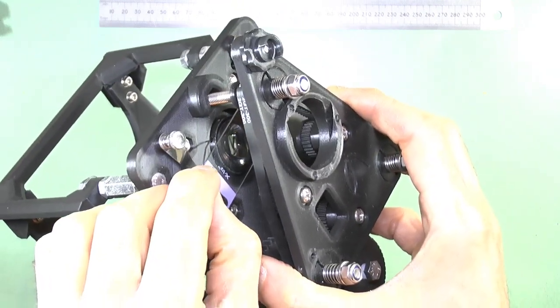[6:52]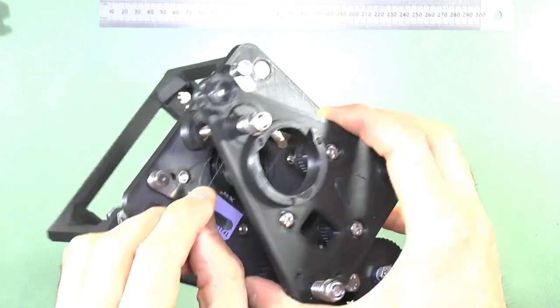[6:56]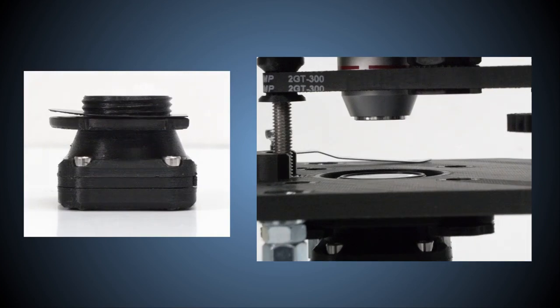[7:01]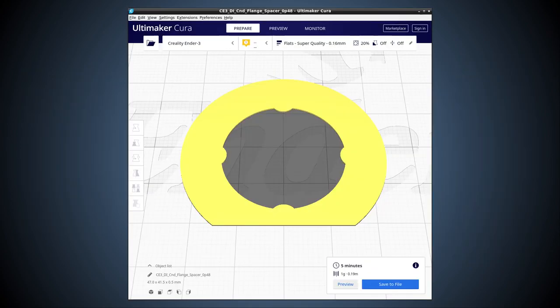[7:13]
Use a hook implement, such as a bent paperclip, to rotate the Uber Pol polarizer. The analyzer is used as usual, with or without a quarter wave plate, as described in the video on the polarizing condenser. See that video for more details about polarization microscopy. Because the Uber Pol adds a little height to the condenser, you may need to add a thicker or additional condenser flange spacer ring to the condenser to compensate for that, if the Uber Pol is sticking up too high above the stage. But that may not be necessary, especially if you use thin polarizing film.
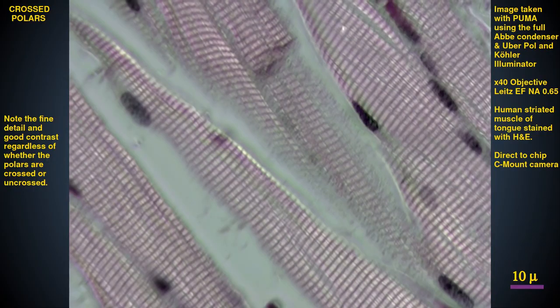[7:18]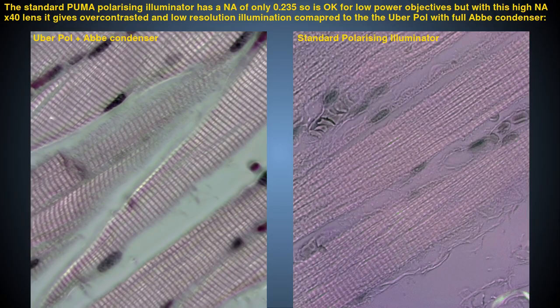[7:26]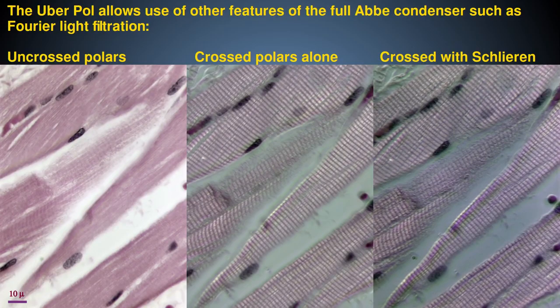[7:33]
The Uber Pol thus allows you to do polarizing microscopy with the full Abbe condenser, because the light is first polarized after it passes through the condenser lenses. This allows polarization microscopy with high numerical aperture objectives and with the Fourier filtration abilities afforded by the full Abbe condenser. You can even use it with immersion optics, but I'll discuss that in another video.
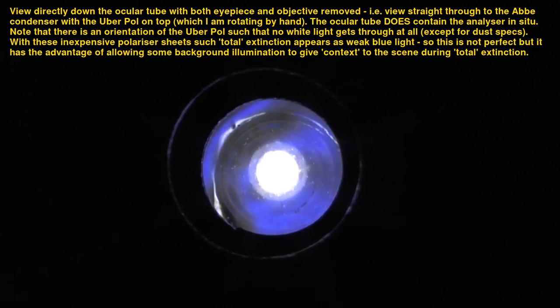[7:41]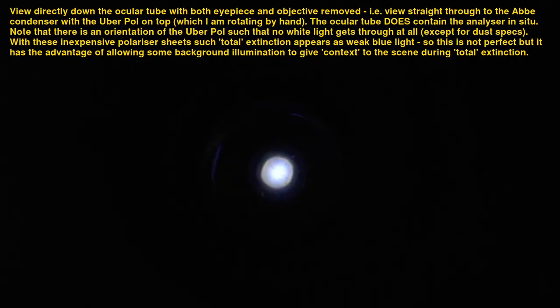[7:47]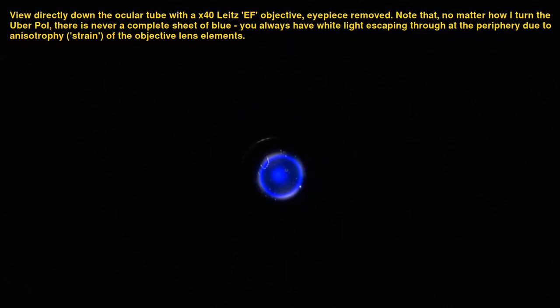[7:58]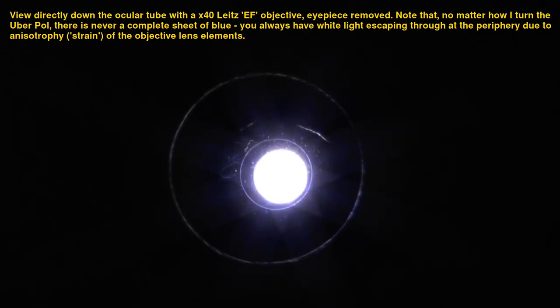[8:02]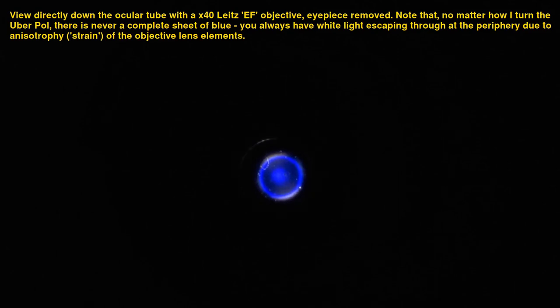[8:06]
Note that the Uber Pol only eliminates the problem of anisotropy or strain in the condenser lenses. You can see here how the light from the condenser is fully polarized to a blue background with these filters when there is no objective in the light path. It cannot, however, do anything about strain in the optics above the condenser, such as in the objective lens. Here you can see some escape of white light due to the strain in this Leitz ×40 objective lens.
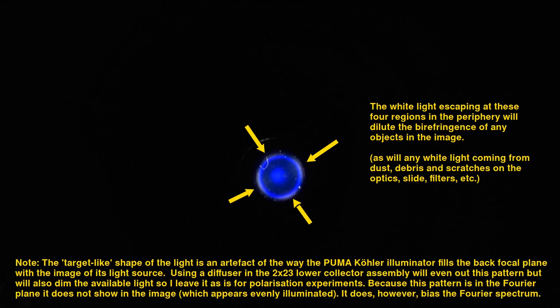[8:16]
This amount of strain is not a problem for routine polarization microscopy, such as is used in medical diagnostics. However, for the most stringent research applications of viewing very faint birefringence, you need special strain-free objectives and other modifications to the optics, but I will not discuss those further here.
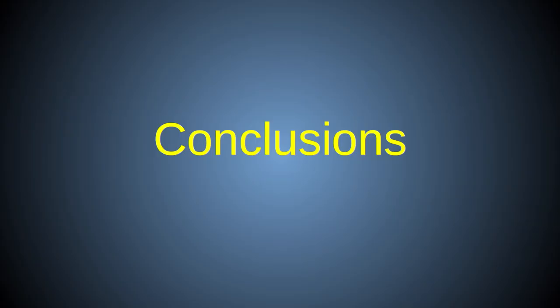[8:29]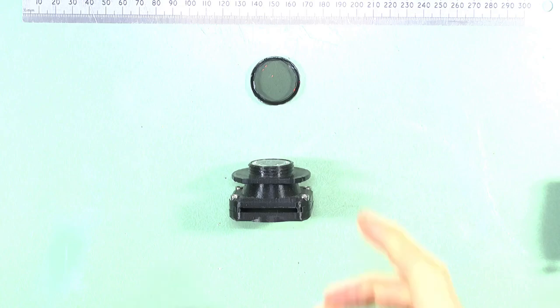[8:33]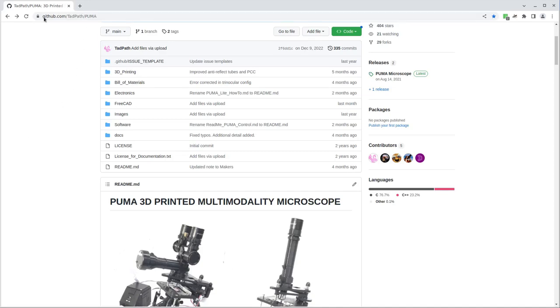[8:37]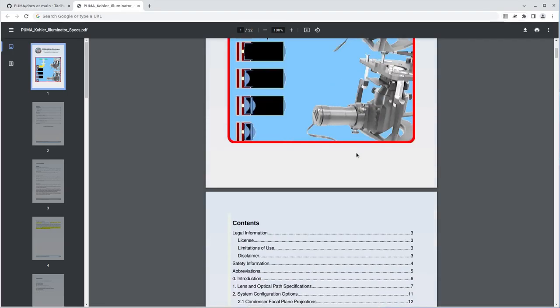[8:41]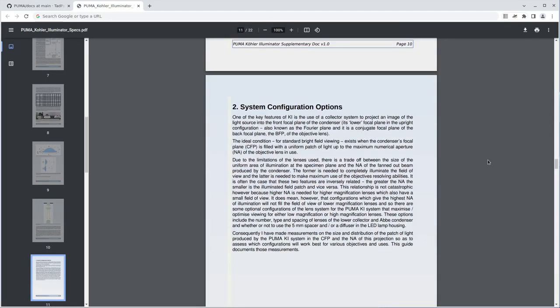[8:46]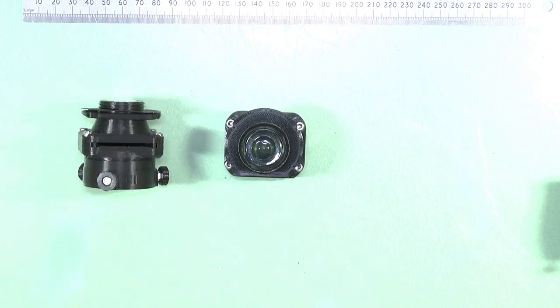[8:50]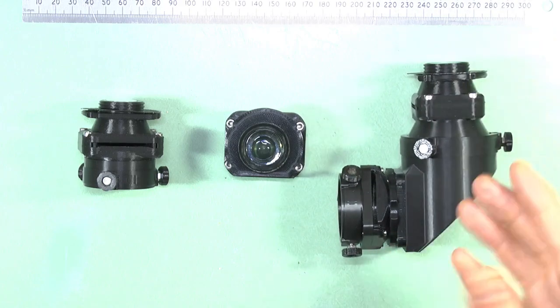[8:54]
So there you have it, all you need to know about the improved PUMA Abbe condenser. All the updated parts are available on the project GitHub page, as is a PDF document detailing the lens parameters described here. Stay tuned to the channel for additional updates, including details of the all-new PUMA High Numerical Aperture condenser for immersion optics, and more info about the full Köhler illumination system.
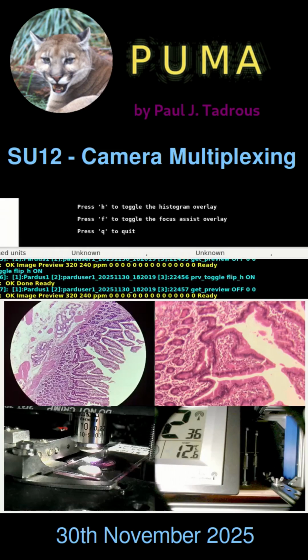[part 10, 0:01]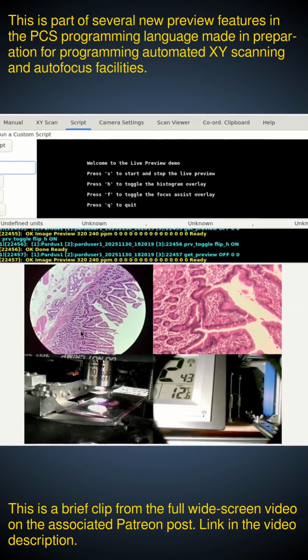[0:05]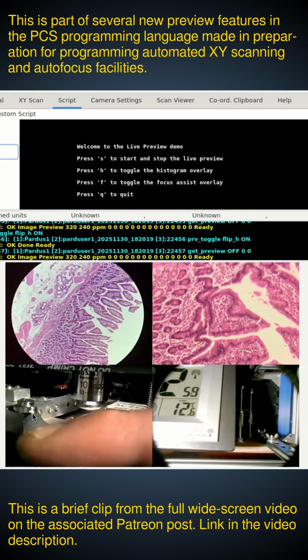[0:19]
So this demonstrates a script for multiplexing four live camera streams from different cameras. And this is the top left low power view of the tissue down the ocular of the microscope. Top right is a higher power view from the side camera on the same microscope. And the bottom left is the live view of the stage. You can see the Zeiss objective there.
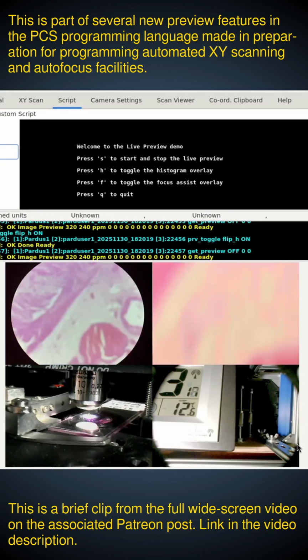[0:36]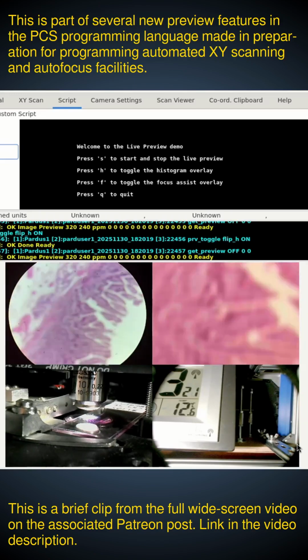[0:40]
And the bottom right is a camera from a different room showing the CNC stage at the back there and the clock. And this is coming in over the network. So look what happens when I move the stage. So you can see the histology moving in unison there and the slide moving on the stage.
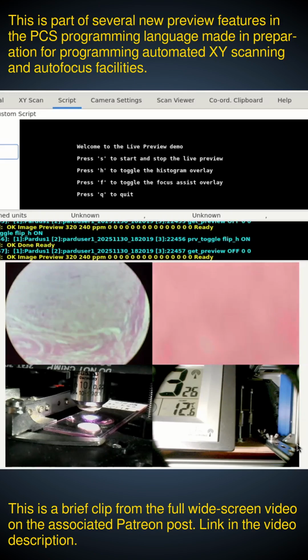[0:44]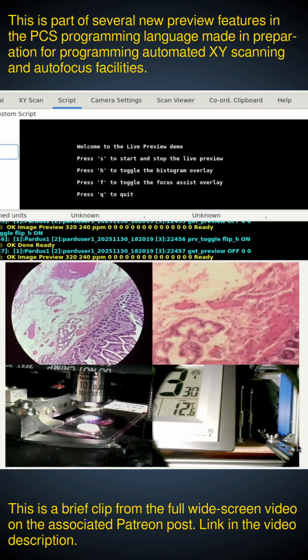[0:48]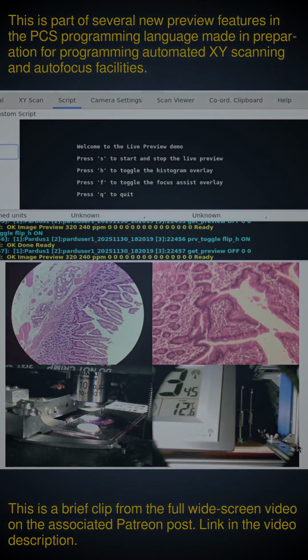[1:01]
Now, each of these cameras can have completely different settings because they are on different Pardus capture servers. So you can adjust the image processing to be suitable for the task. And I'll say more about image processing for autofocus functions in another video.